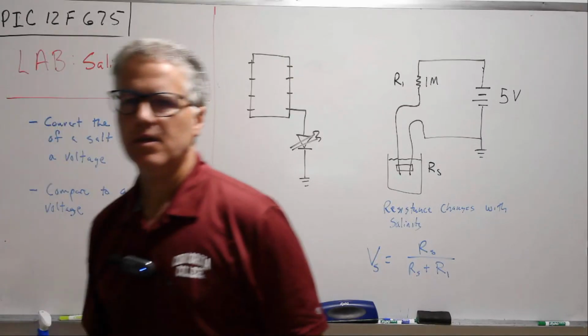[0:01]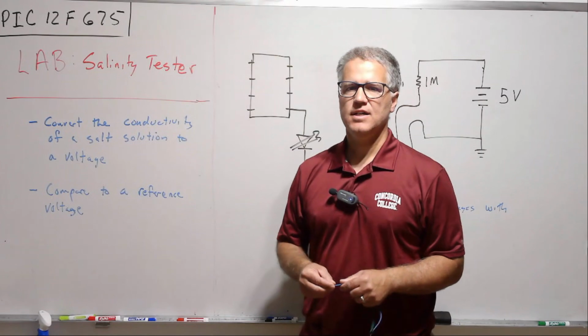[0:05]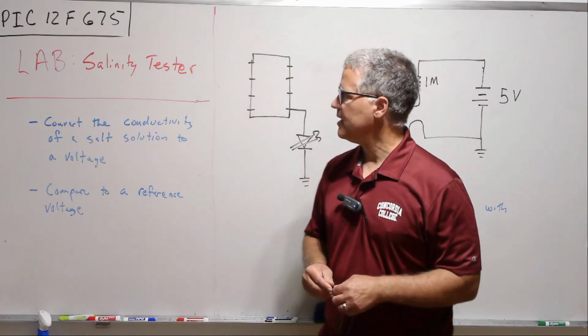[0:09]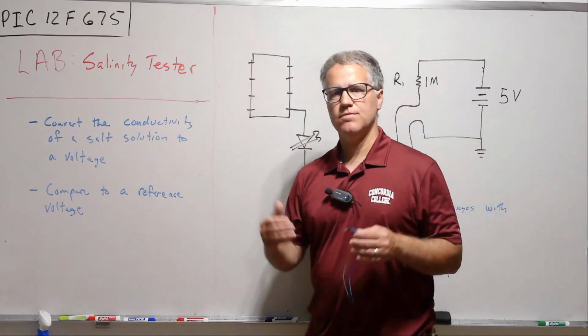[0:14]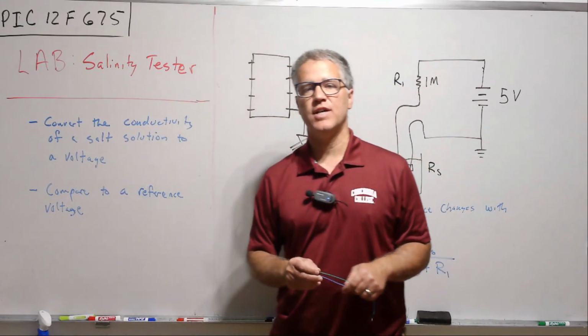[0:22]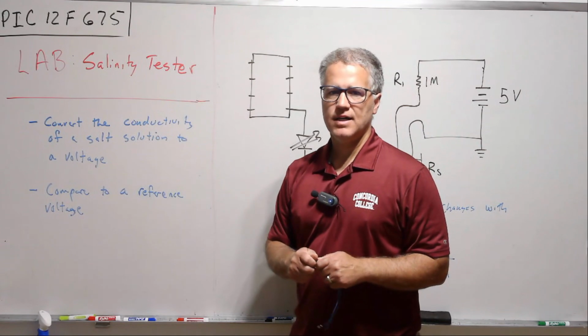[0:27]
Okay, I think we'll get started. So today we're going to do a little application lab after we've learned a little bit about this PIC12F675. This will be utilizing the comparator, and what we're going to do is build a little salinity tester. So the experiment will be pretty easy. It's stuff you can do at home even if you don't have access to a lab. All you need is some distilled water from the grocery store and some table salt.
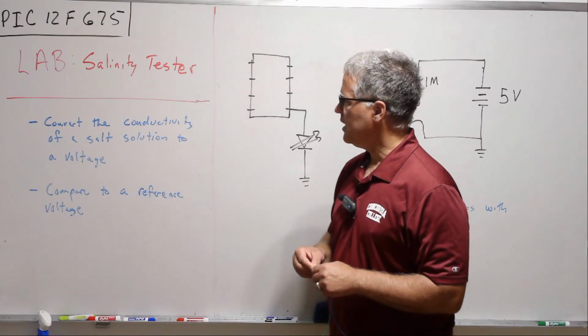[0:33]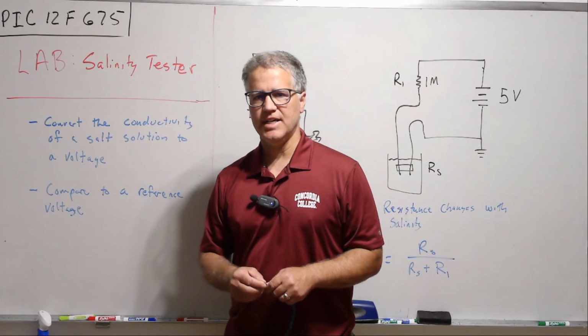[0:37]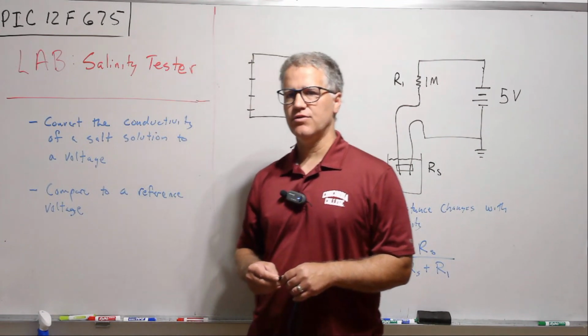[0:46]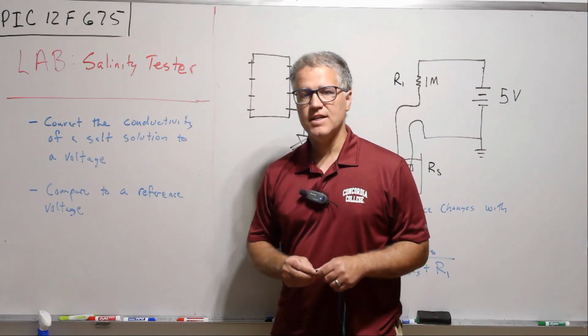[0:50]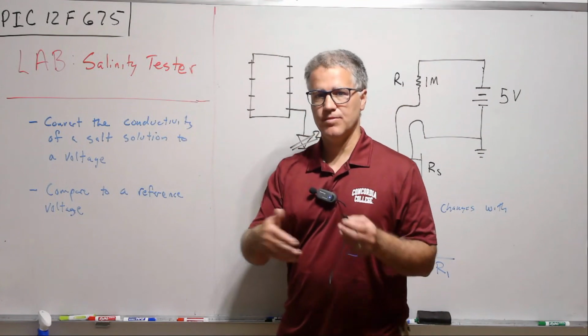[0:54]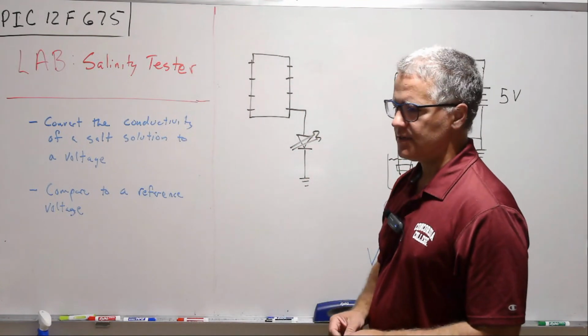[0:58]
And so we're just going to show the basic idea here, again emphasizing the microcontroller itself and the programming that goes into it, the assembly program that goes into it. So certainly you could do a little bit more advanced and careful study than this experiment. But I think this will show you the basis for how we would do something like this.
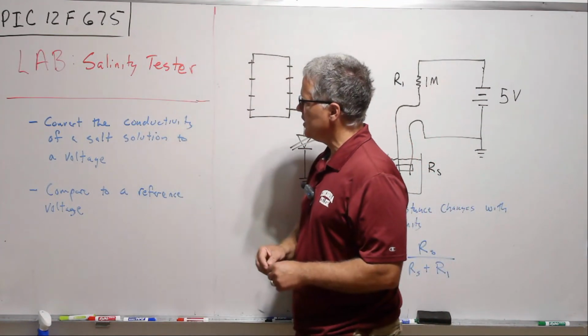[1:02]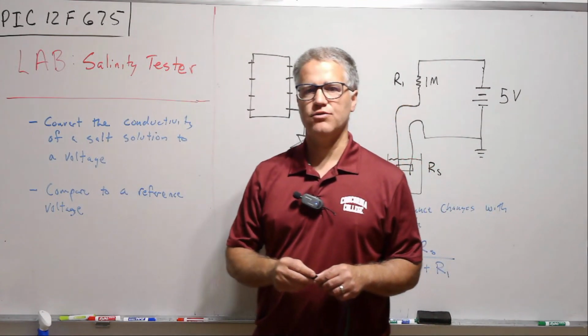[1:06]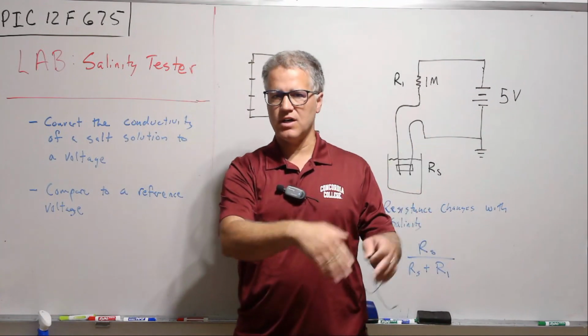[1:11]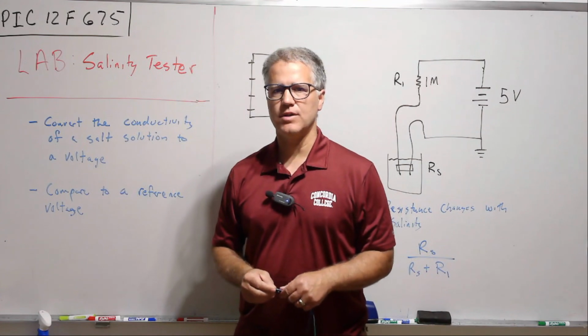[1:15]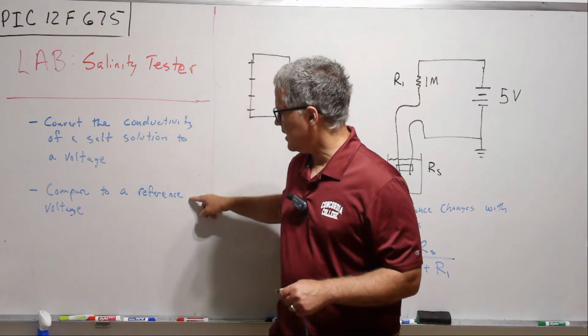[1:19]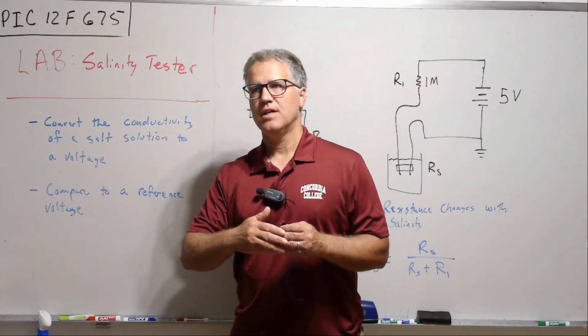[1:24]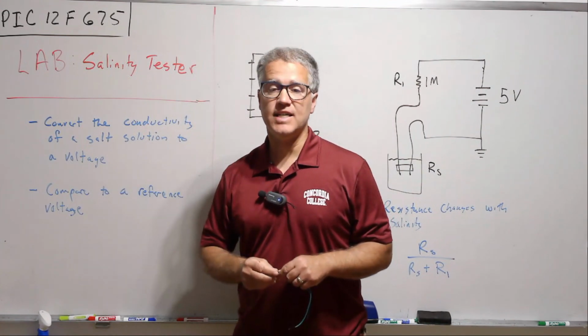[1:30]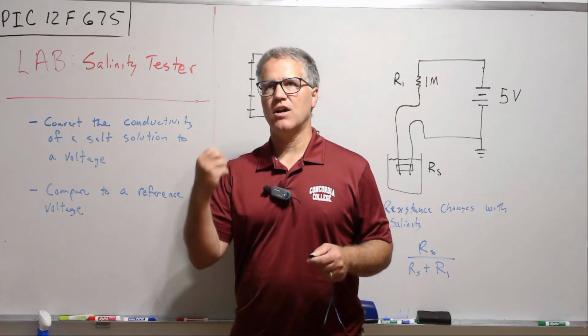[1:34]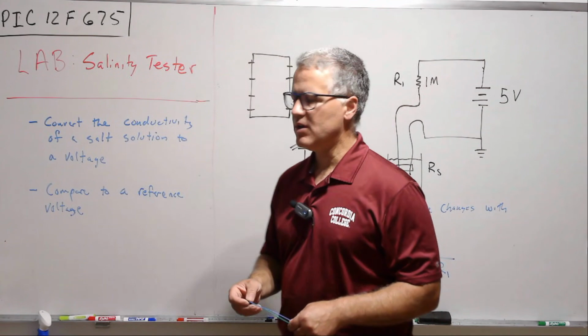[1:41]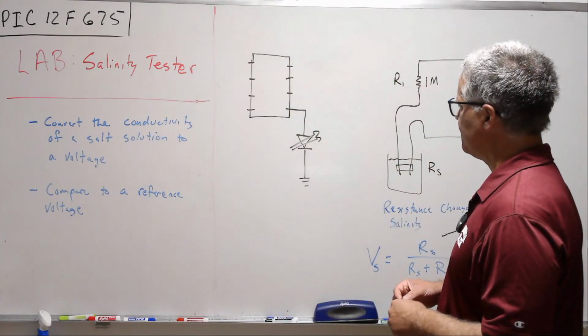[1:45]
So what we're going to do is convert the conductivity of a salt solution into a voltage, and we're going to compare distilled water with tap water and with a one molar sodium chloride solution. And so we'll compare to a reference voltage, and if we go lower, and I'll talk about that in a minute, then the comparator will turn an LED light on indicating the salinity is too high. So we want our LED light to be off when we have either distilled water or tap water, and then turn on when we have a high salt solution.
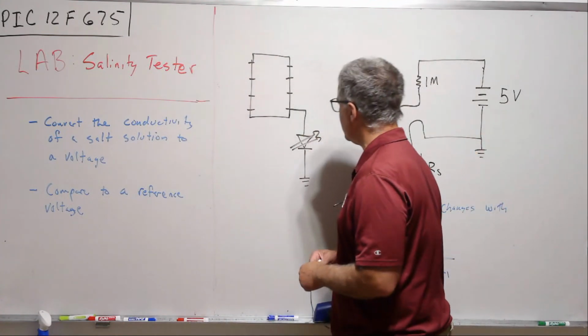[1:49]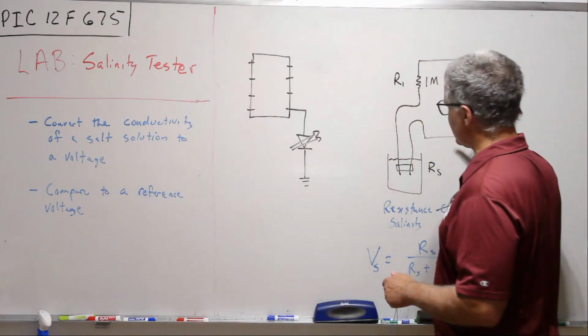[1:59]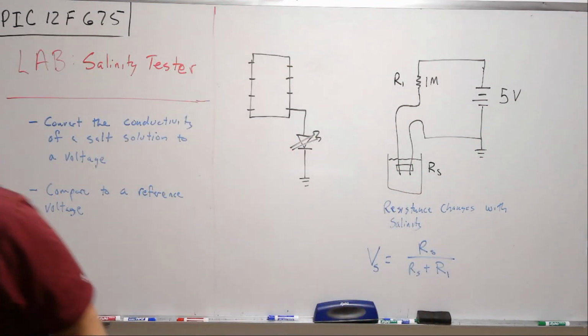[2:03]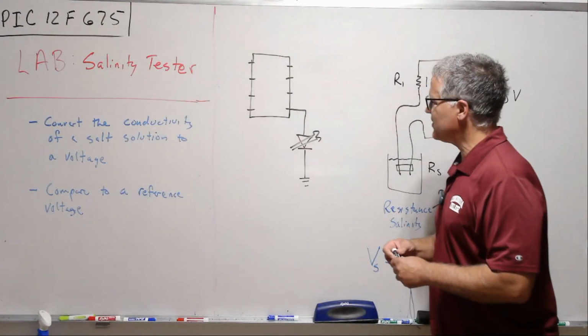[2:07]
So the setup is pretty simple here. We are going to just utilize the output of the comparator to our LED. And then let's talk about this circuit first here. My voltmeter keeps beeping at me, so I'll turn that off.
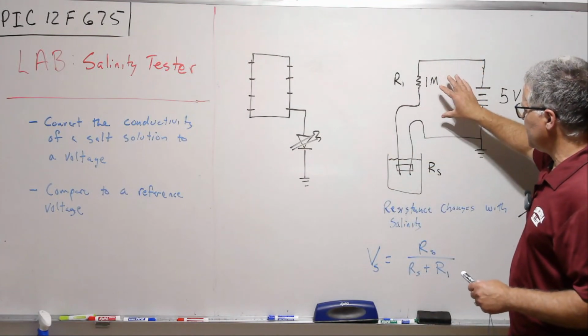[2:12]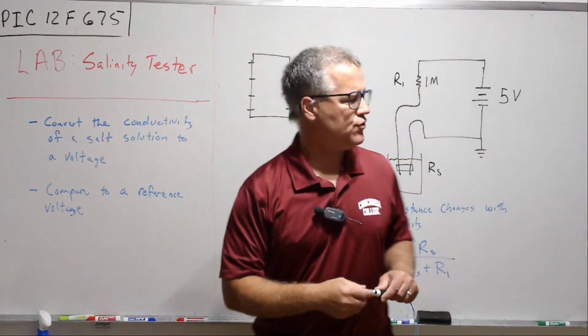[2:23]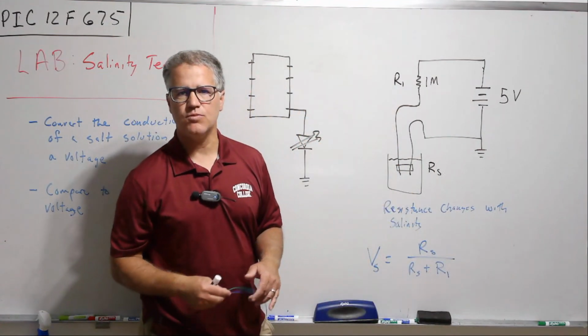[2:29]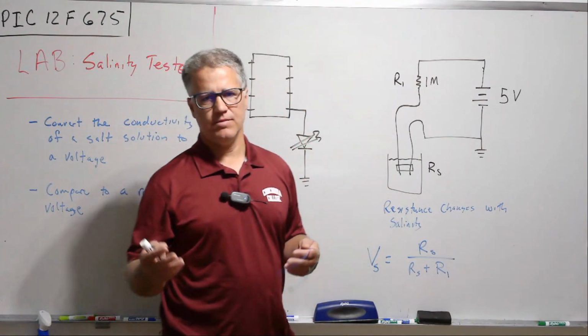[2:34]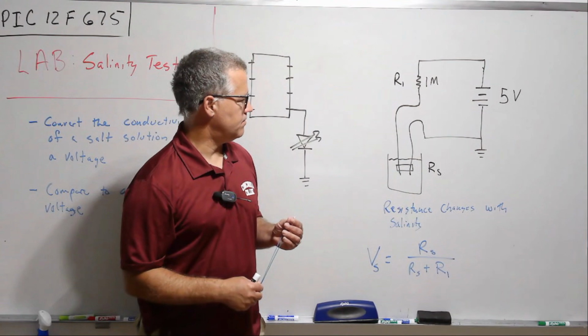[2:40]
Very simple circuit here, a voltage divider circuit. And we're going to have our solution in series with a resistor. I've chosen a very large resistor here because I want the voltage across the leads down here to be small. If we exceed even a volt, but say 0.87 volts, we will start to produce some oxygen and hydrogen at the electrodes. And so we don't want that redox reaction happening. We want to just measure the conductivity between the leads here.
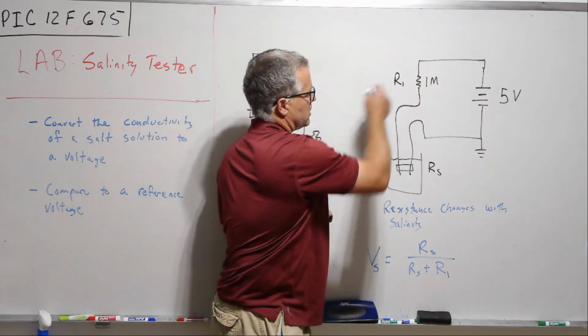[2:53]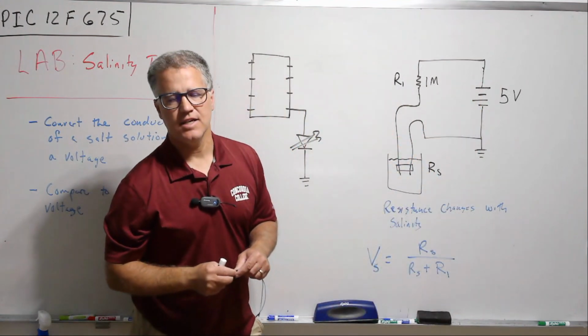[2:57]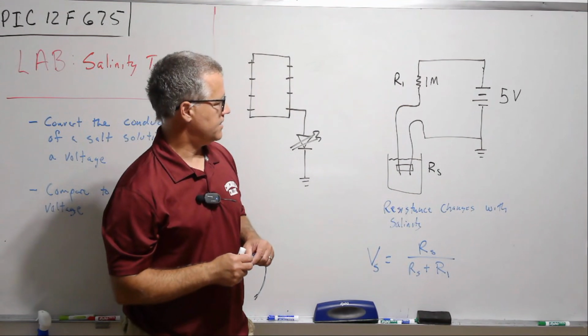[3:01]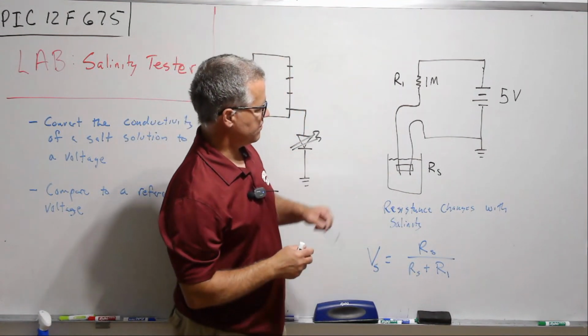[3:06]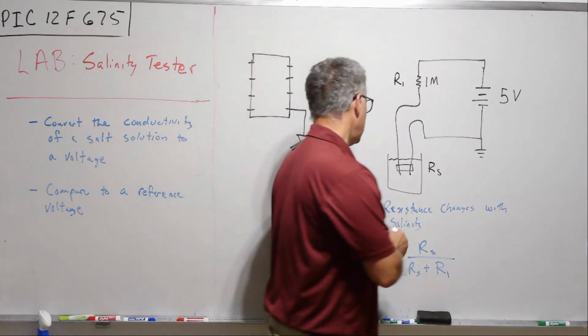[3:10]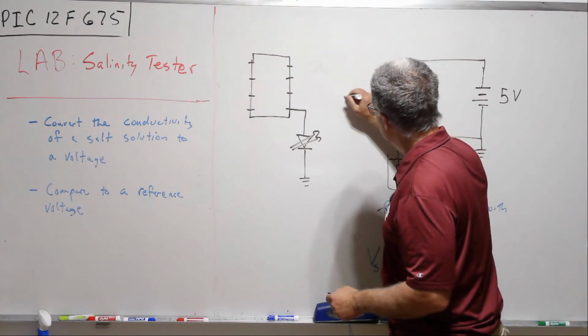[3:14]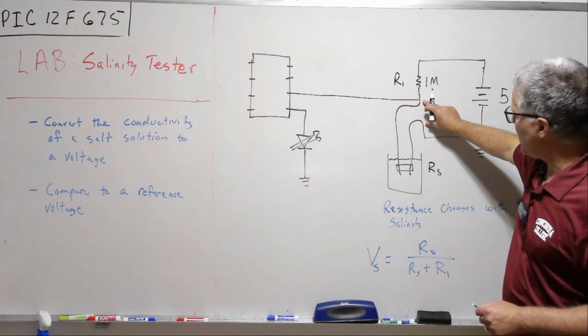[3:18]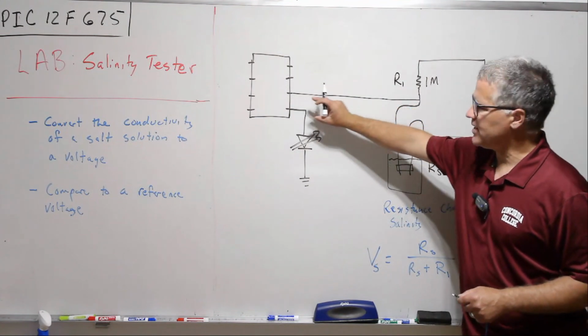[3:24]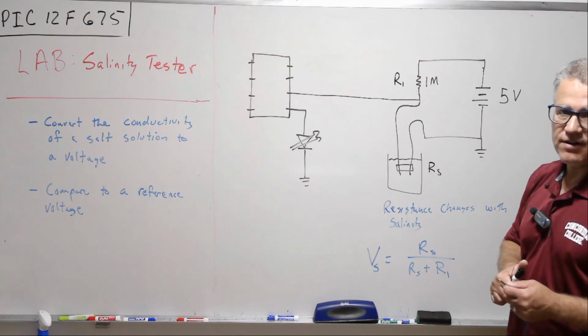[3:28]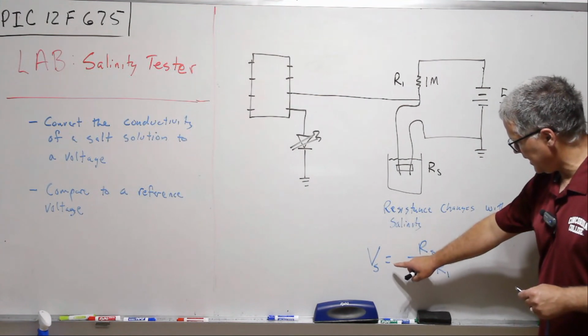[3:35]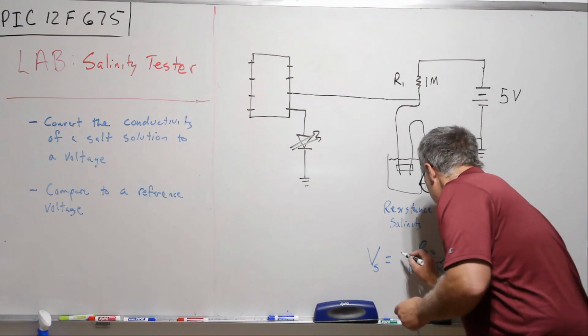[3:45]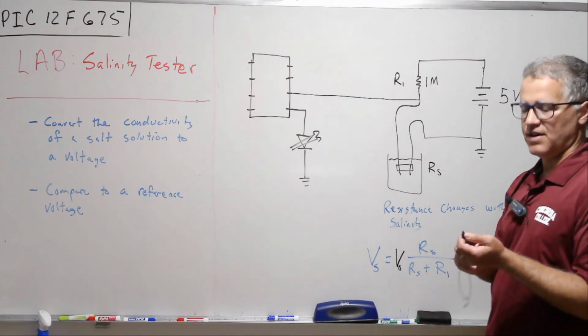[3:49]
So we put a large resistor here. That'll let us utilize the same voltage source that we're using to power the chip, and then we can drop the voltage enough across the solution. Simple voltage divider. We're going to then take this voltage across the, we'll call this RS, the resistance of the solution, and bring that into pin 1, which will compare then to a reference voltage. The voltage across here then is simply RS divided by RS plus R1 times V source, V naught, so times the 5 volts.
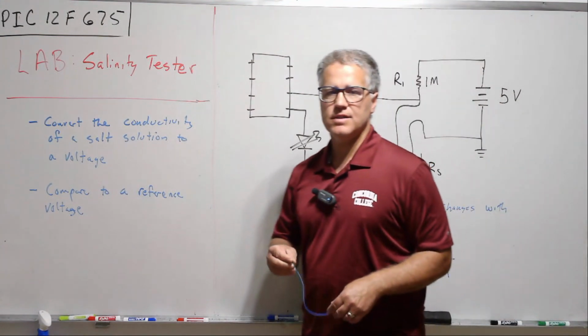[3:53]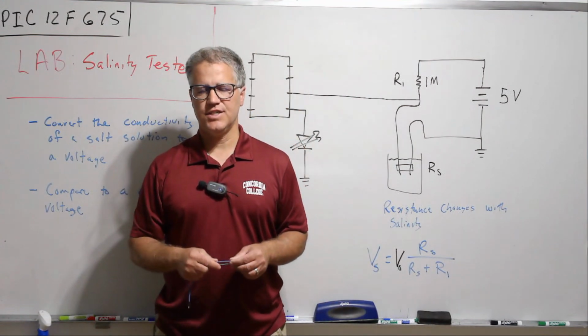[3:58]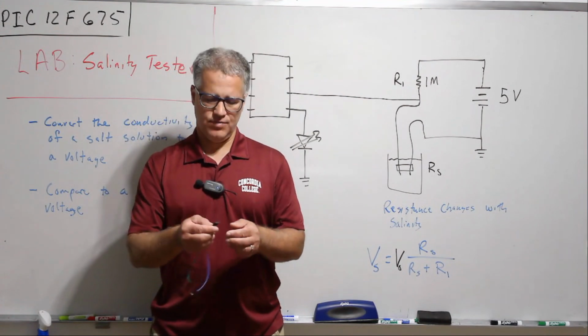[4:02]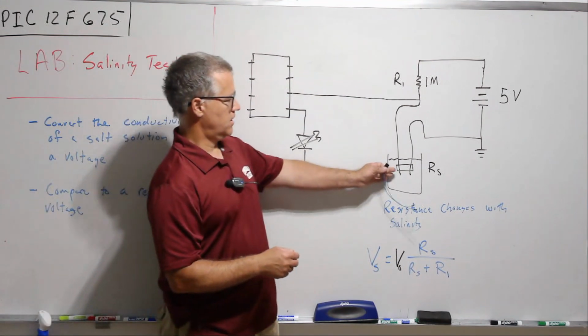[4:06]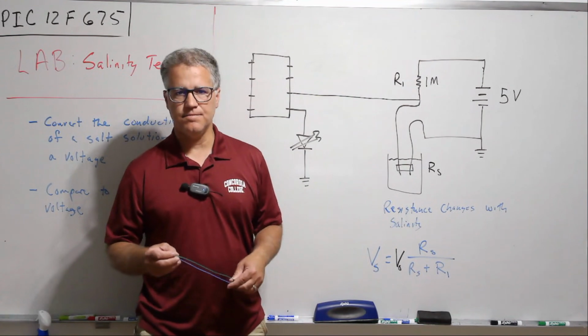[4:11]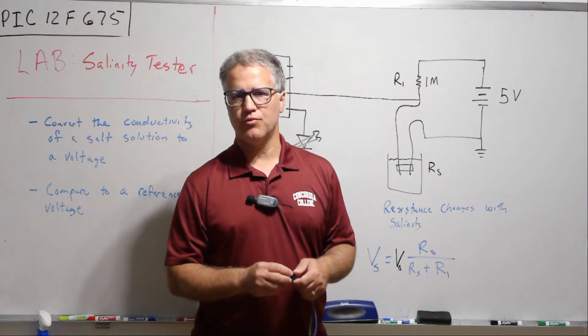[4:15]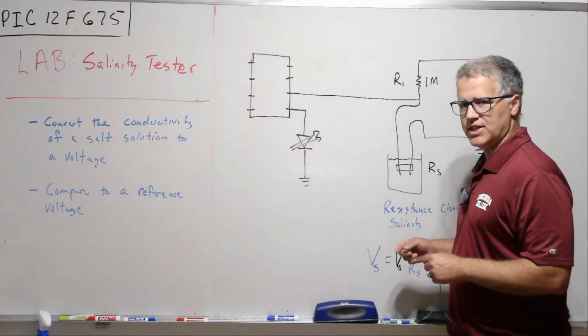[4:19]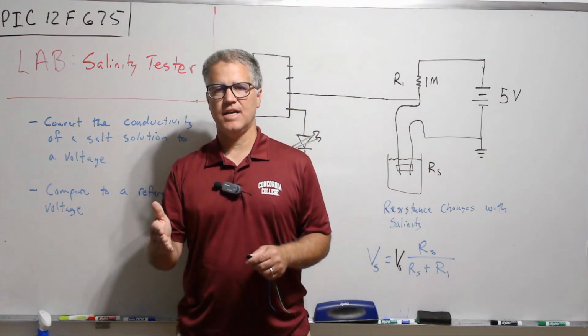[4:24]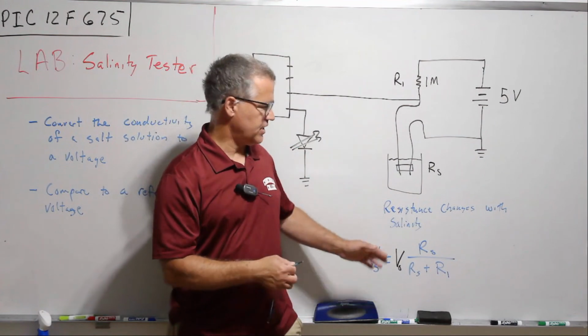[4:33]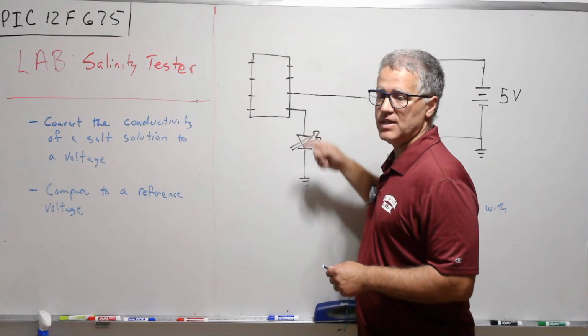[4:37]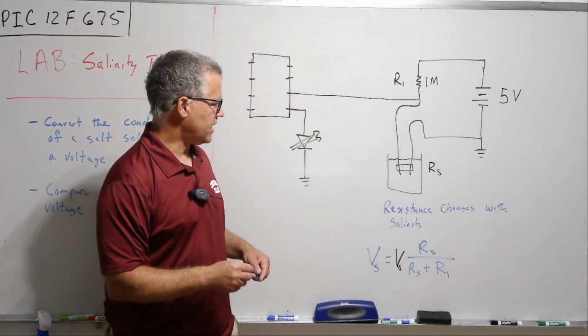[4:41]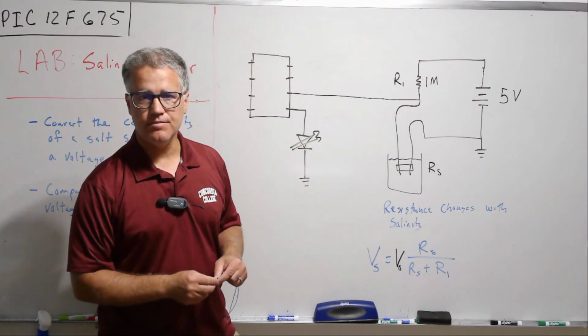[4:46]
Okay, now I'm going to do this a little bit out of order. We'll look at the circuit first, and then we'll talk about the code afterwards, because there's a little bit to it in terms of building your little device here for testing the solution, and then getting that all set up. Now, I did do a couple of pre-calculations. I wanted to figure out the voltage of the tap solution, the de-ionized or distilled water solution, and the one molar sodium chloride solution. So I checked that voltage so that I could institute the correct reference voltage here. The idea being that we would get the range of voltages that we want, and then we can set things up internally in the code to turn the light on when we go below a particular voltage.
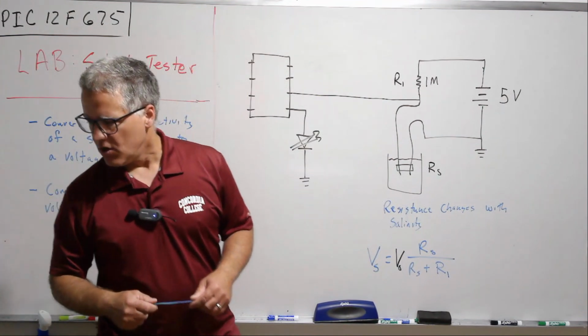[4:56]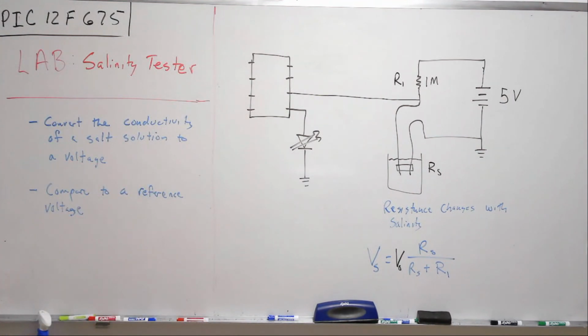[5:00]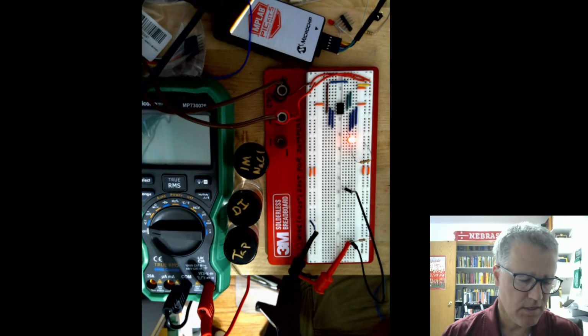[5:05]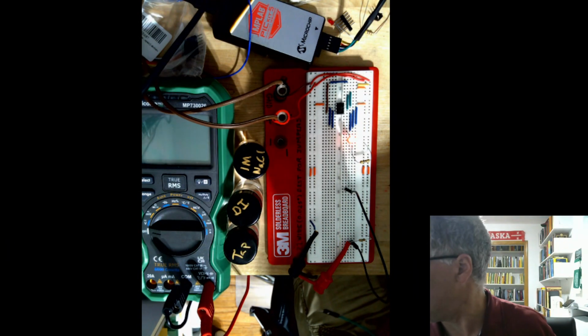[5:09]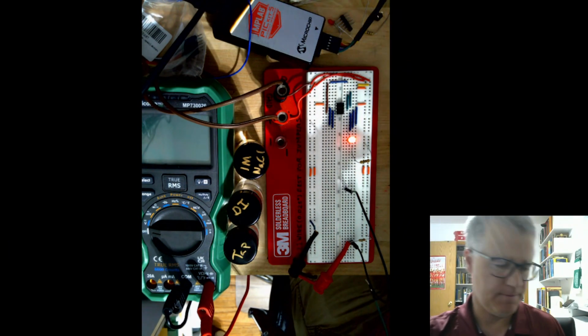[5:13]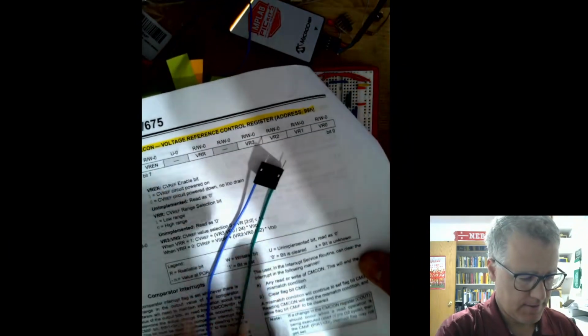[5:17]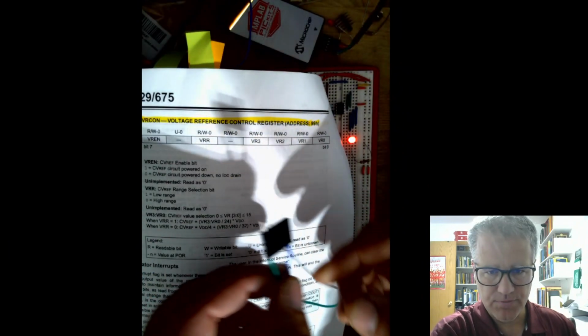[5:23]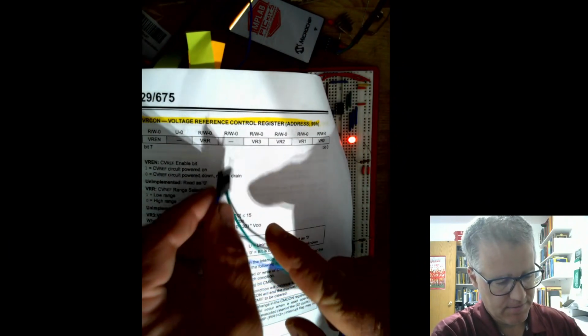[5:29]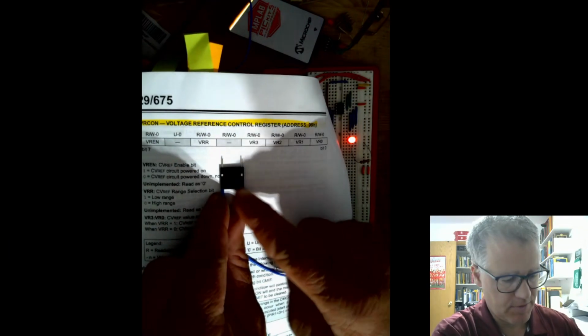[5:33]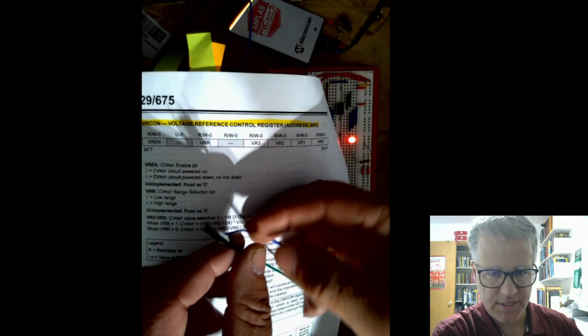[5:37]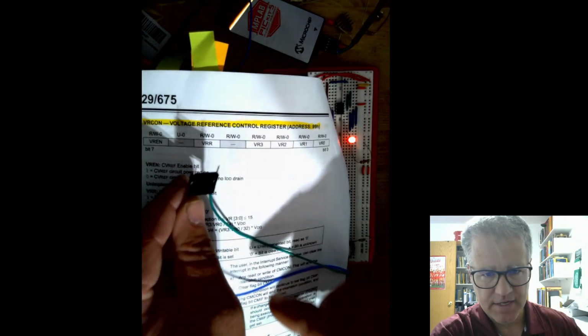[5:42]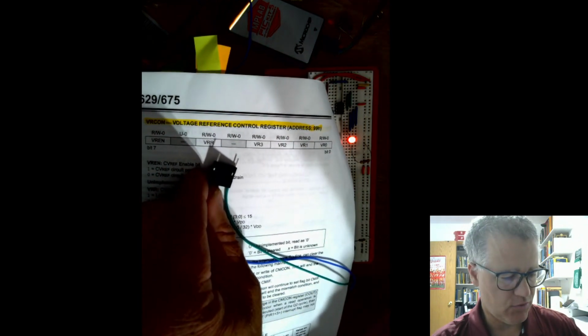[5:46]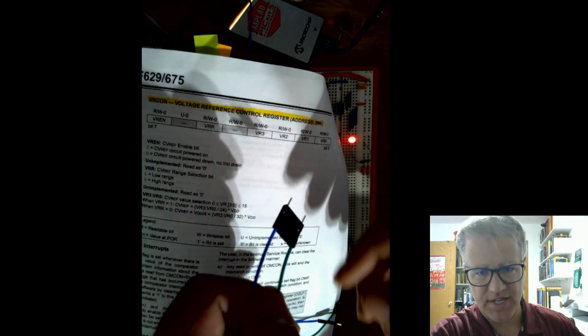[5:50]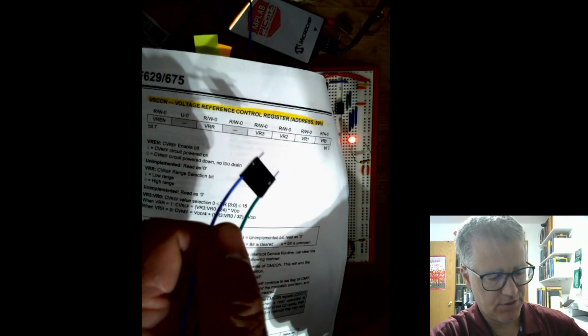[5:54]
Okay, so let's go to the circuit and take a look at that. First of all, I'm going to try to put this against a background. I've just built this solution probe with these DuPont leads. So maybe you have some of those. I chose a six-member connector piece here, and then I put these on both ends of that so that this will always have a consistent distance between the leads. It also provides a stable case for these wires when you dip them into the solution. So this is just completely home built.
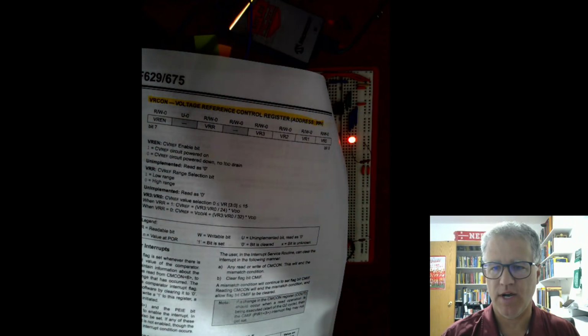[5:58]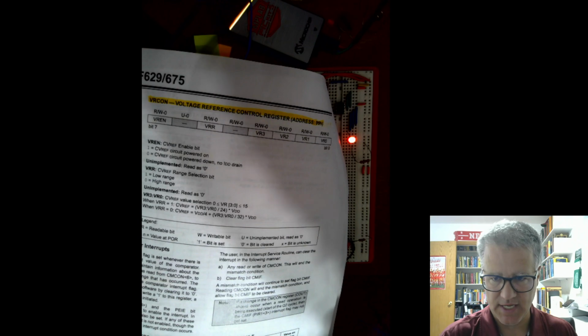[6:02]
Now you could take some wire and use a hot glue gun or something like that. Do something to try to keep the wires consistent. You could use two separate wires, but it's nice to have the consistency of distance.
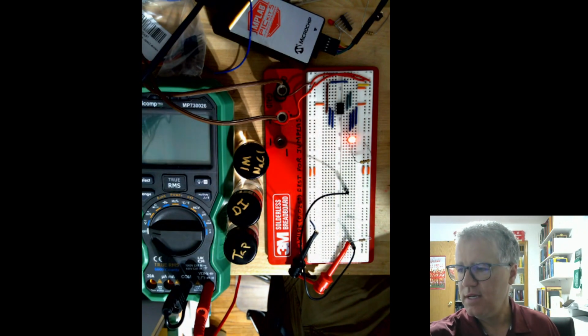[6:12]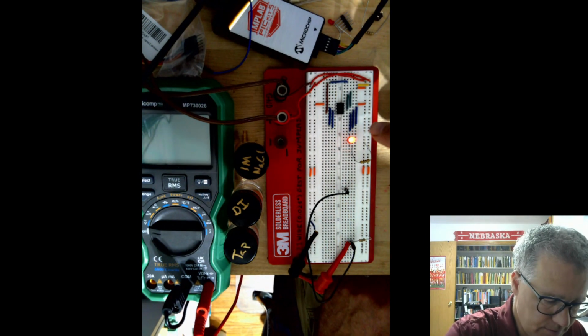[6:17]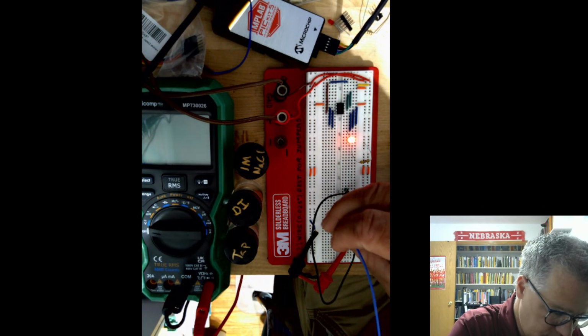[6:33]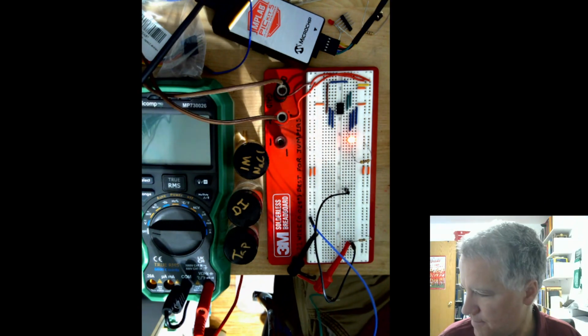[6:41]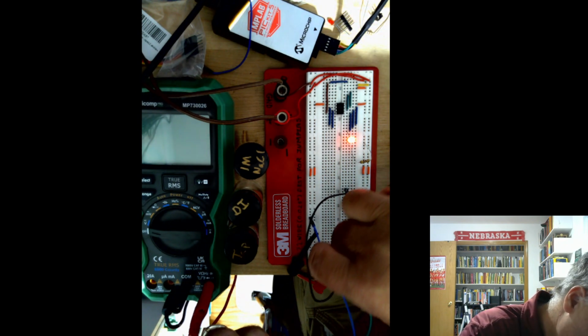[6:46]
All right, so let's look at the circuit here now. Simple setup. The light is on here because it's just getting some spurious voltage because nothing's hooked up. So we'll see it blink or turn on and off as we go. The voltage divider then is down here. So I'm going to connect one lead of the solution probe to ground and one lead to the other part of this circuit. And then I'm going to turn my voltage on.
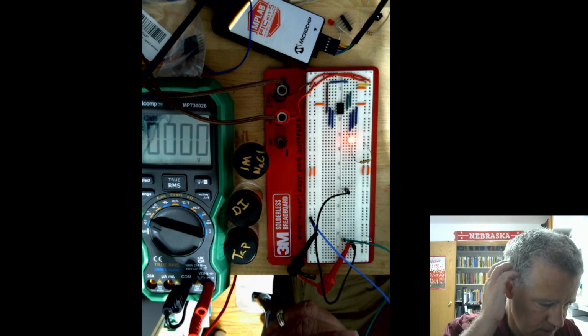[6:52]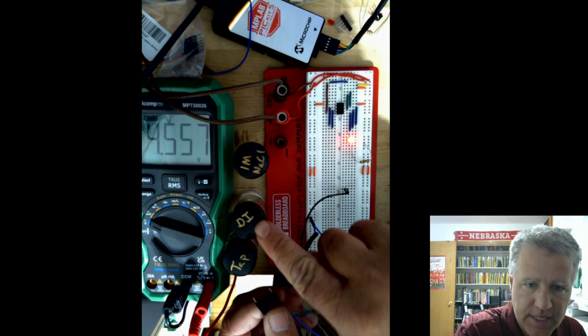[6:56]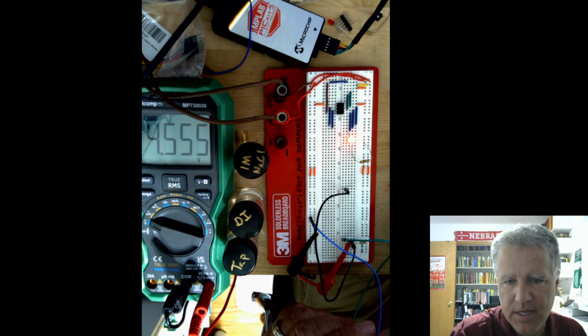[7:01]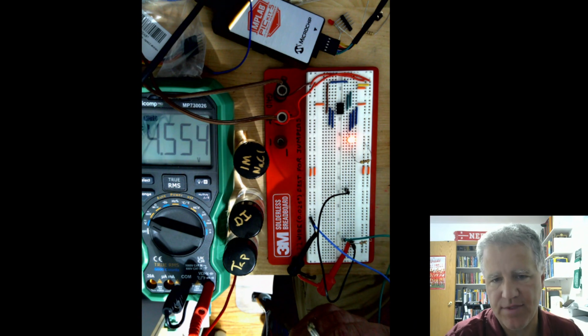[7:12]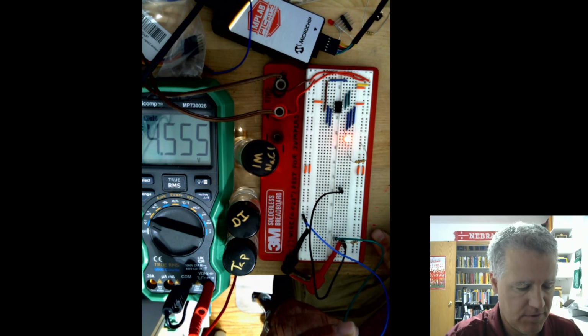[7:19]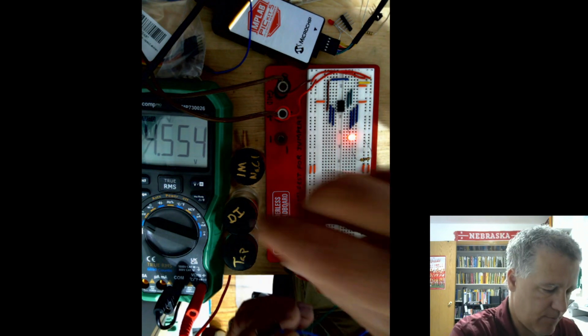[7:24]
And first, let's put this into the deionized water. So I've got deionized water, tap water, and sodium chloride. If you're doing this in sequence, probably best to go from the most dilute, the deionized, up to the most concentrated. Then we can pretty much just dry the probe and dip it in. If you're going the other way, you'll want to wash the probe off, make sure that you don't carry any salt on the probe into the deionized or the tap water solution.
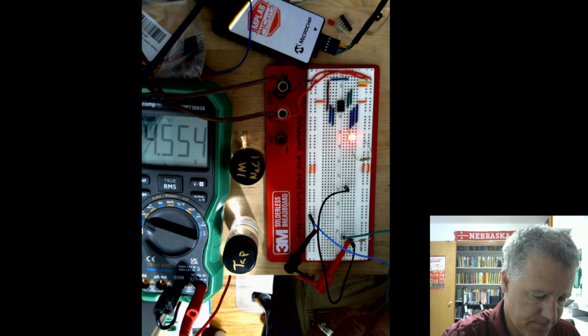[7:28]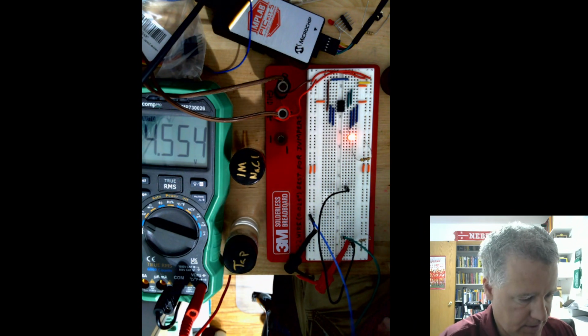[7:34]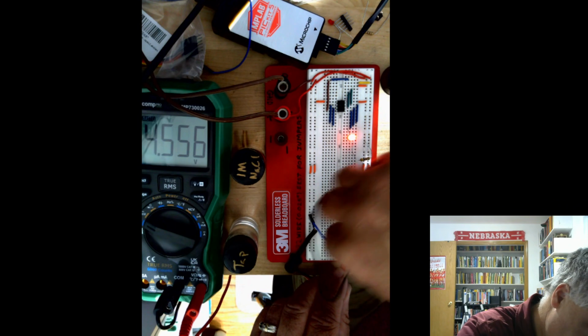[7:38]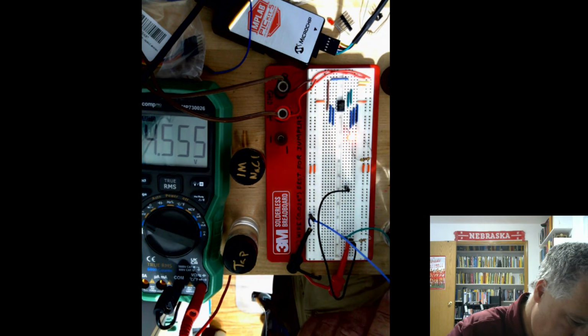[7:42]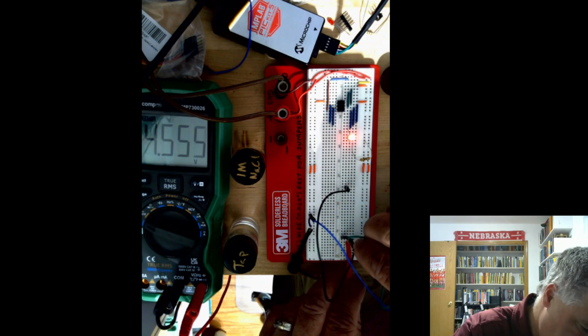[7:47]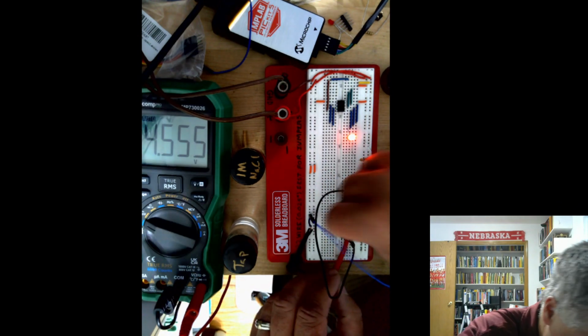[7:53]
So let's try the deionized solution first. And we'll see the voltage drop here considerably because even in the, let's see what's going on. Voltage measured across here. Must have something mishooked up. Oh, yeah, I do.
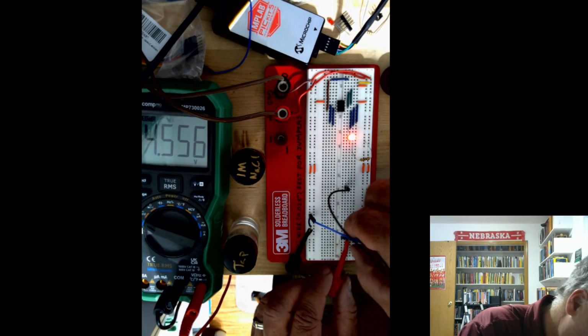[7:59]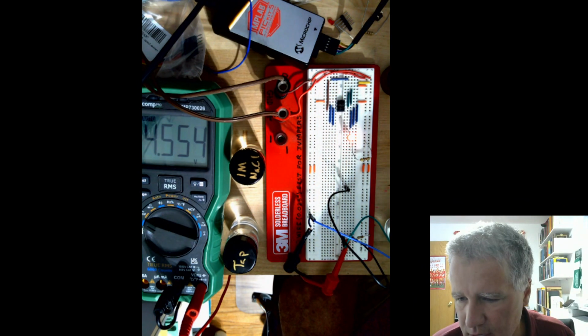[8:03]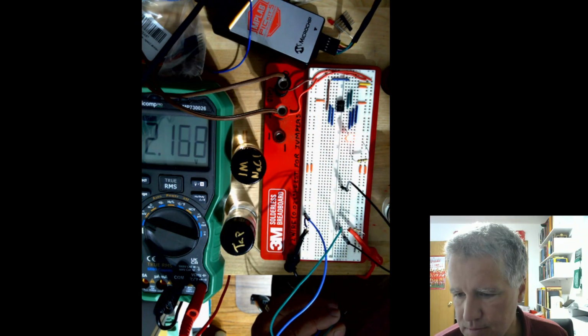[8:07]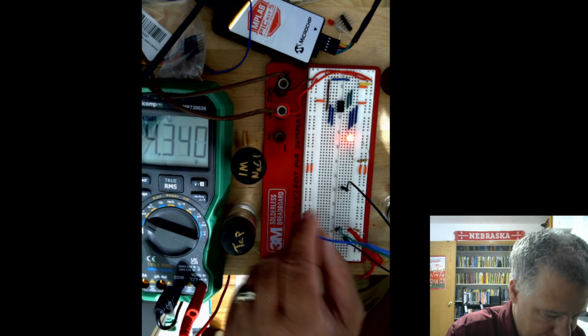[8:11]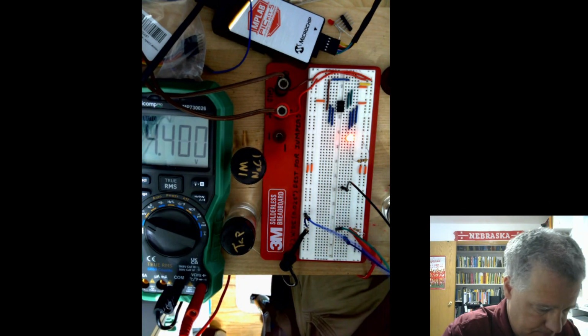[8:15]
Okay, I'm gonna pause the video and then figure out what I've got mishooked up here. Okay, I think I must have had some wires in the wrong spot, or there was a flaky spot, but I've taken them out and re-put them back in. It seems to be working now. So let's look at our voltage here as I put this into the deionized.
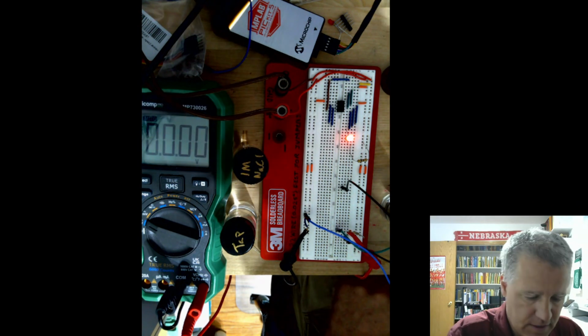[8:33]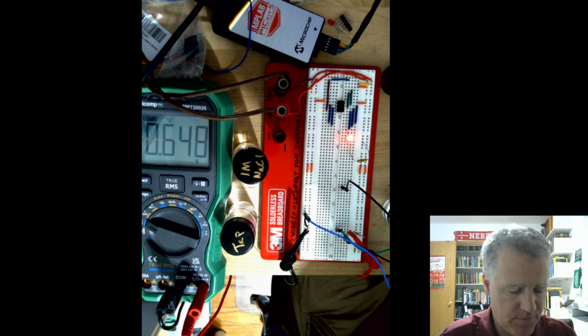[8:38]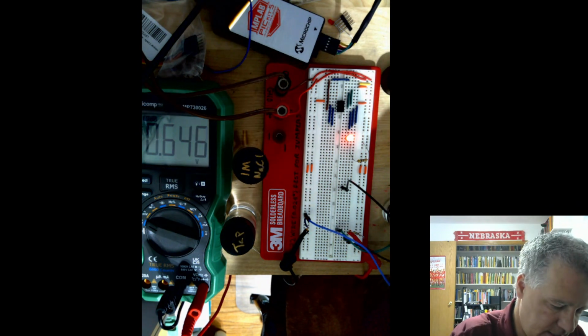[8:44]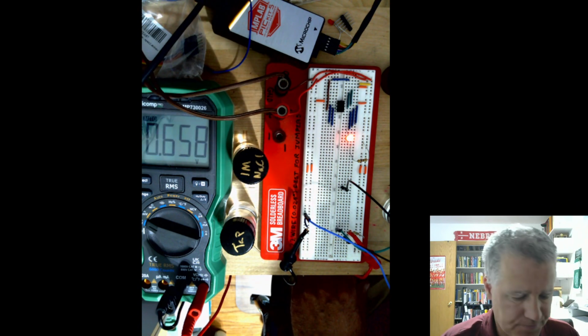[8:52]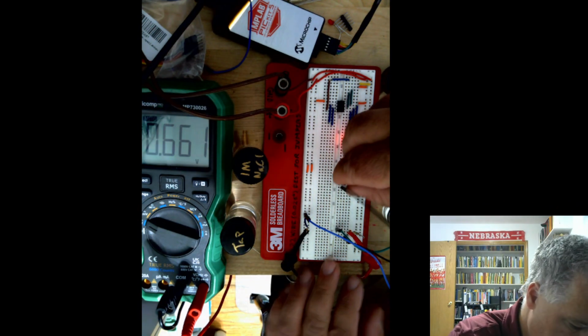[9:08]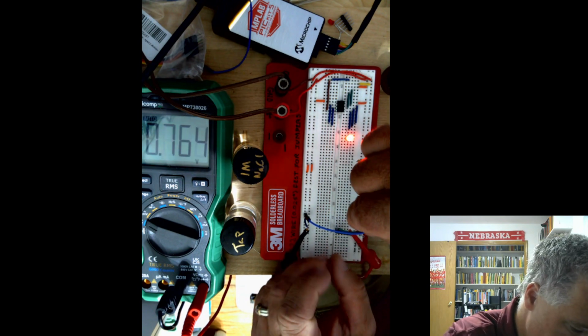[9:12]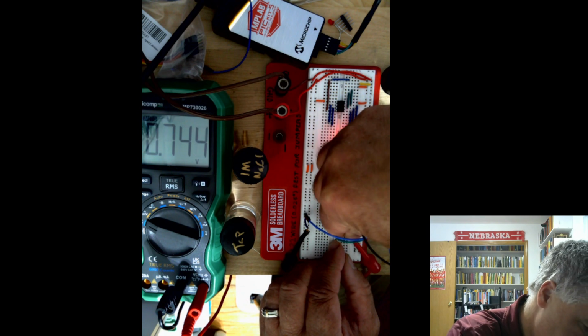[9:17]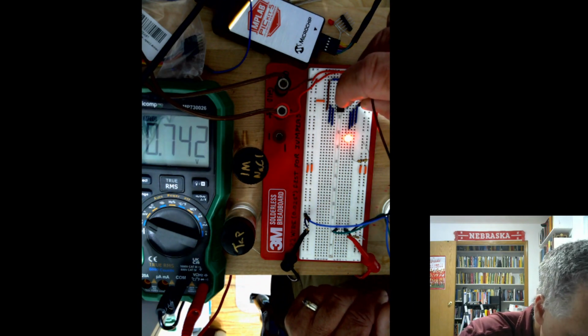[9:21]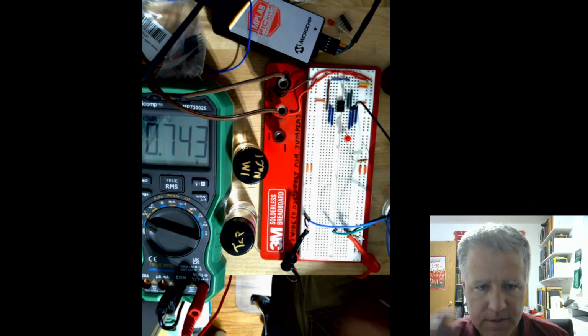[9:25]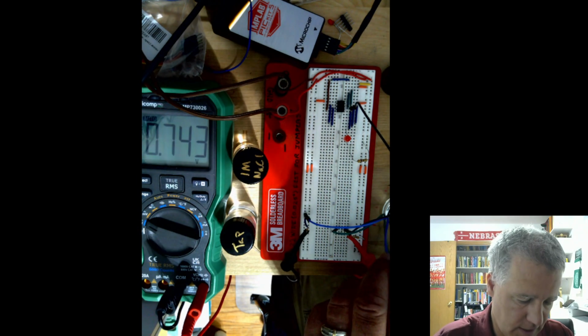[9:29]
So we've got the probe in solution here. I'm going to now take a lead and bring that over to the input, which is 1, and our light goes off. Okay, so we're in our distilled water and our light goes off.
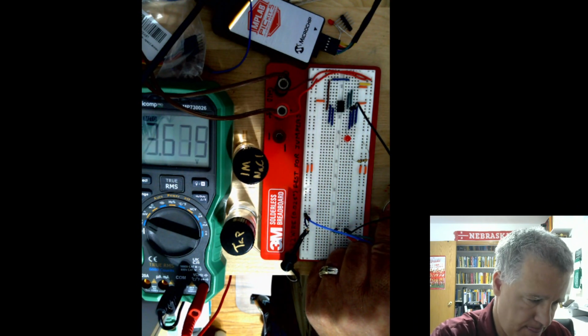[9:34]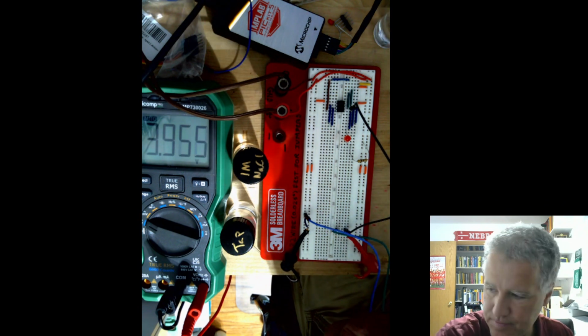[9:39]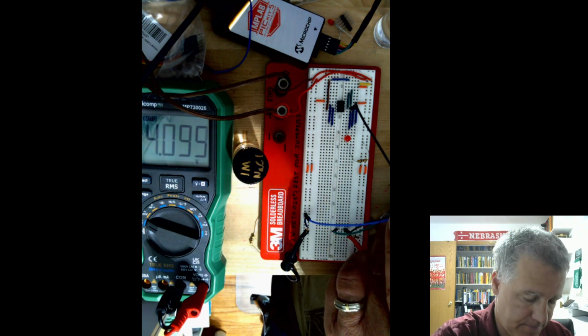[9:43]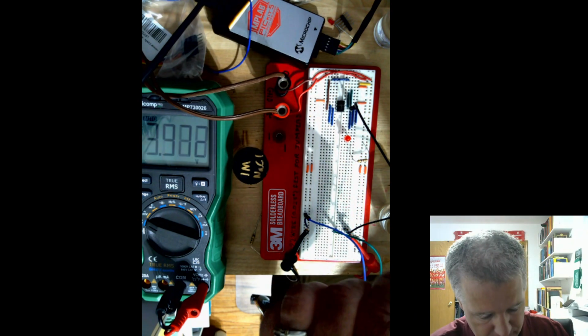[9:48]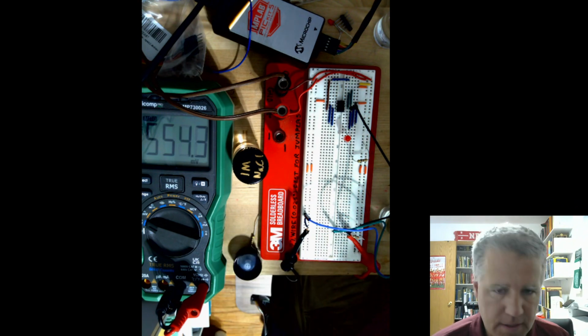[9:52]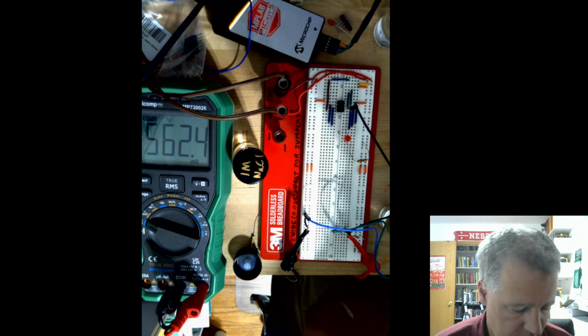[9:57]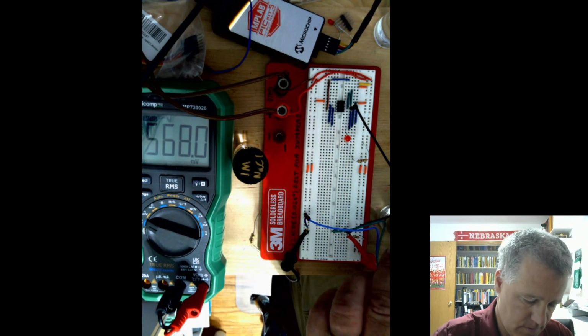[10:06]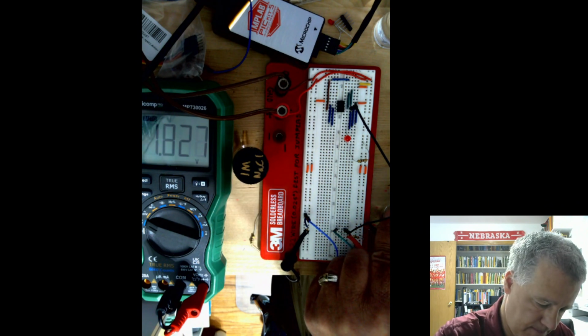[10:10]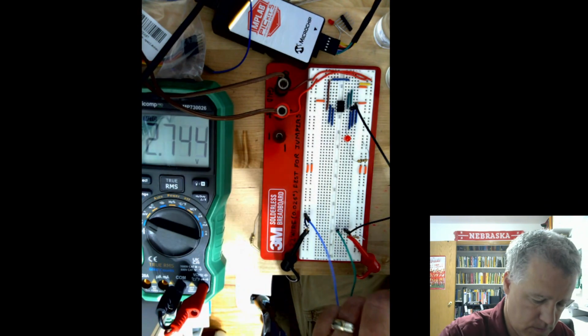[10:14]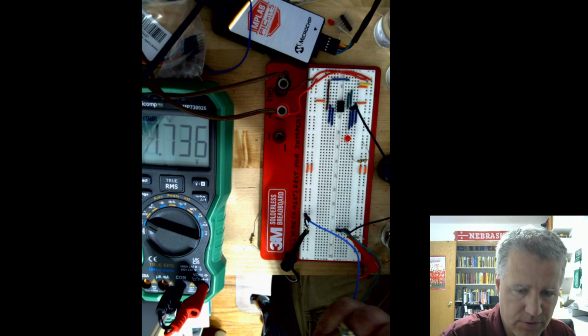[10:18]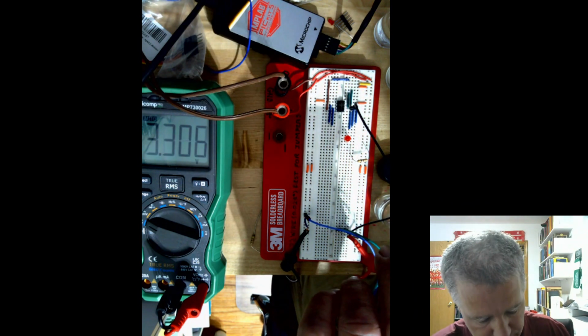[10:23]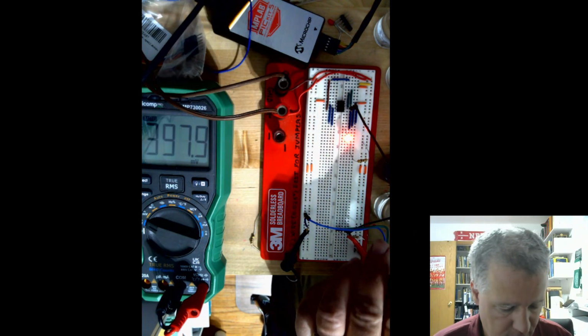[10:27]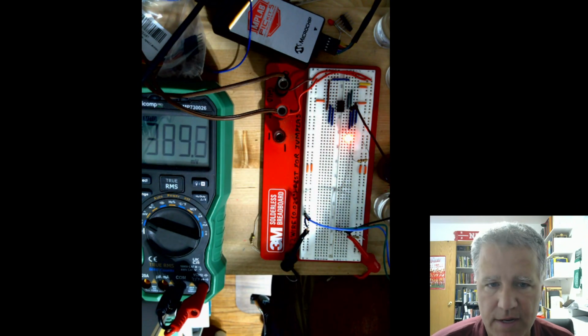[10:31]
And now finally, we will use the 1 molar sodium chloride solution. And now we are below the threshold and we can see that our light went on. So this is our circuit working here now.
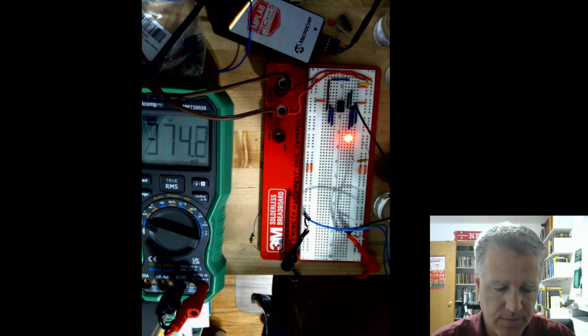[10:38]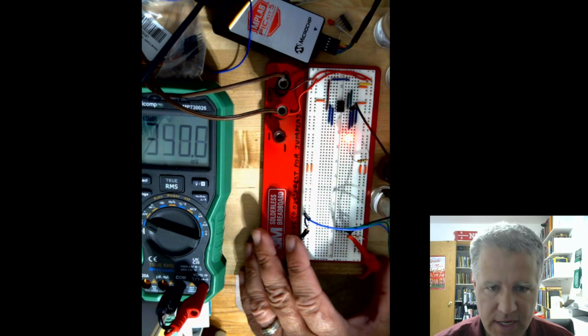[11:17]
Now, if you wanted to be a little more advanced with this, you could make several salt solutions and try to get a profile of the voltage as a function of the salinity. And you could be a little more sophisticated in how you turn things on and off. If you want to get a little more advanced with the code, you could shift to using the A to D converter and then having a sequence of lights light up for the level of the salinity. So there's lots of things you can do from here, but this is showing the basic start of that. Let's go ahead and look at the code now.
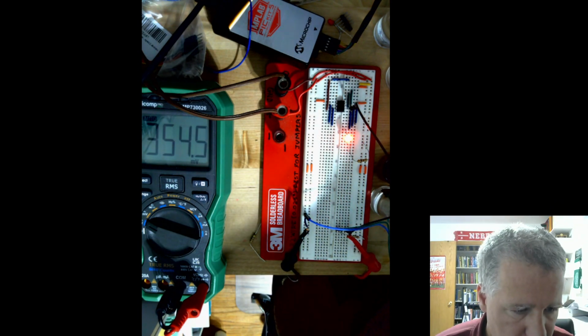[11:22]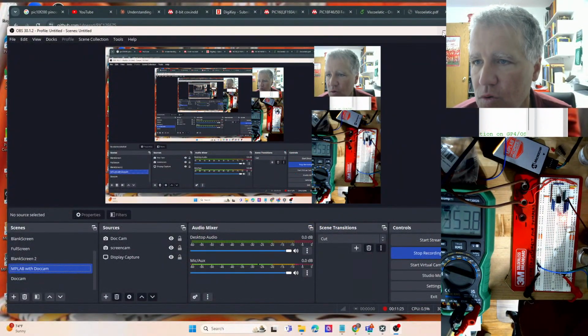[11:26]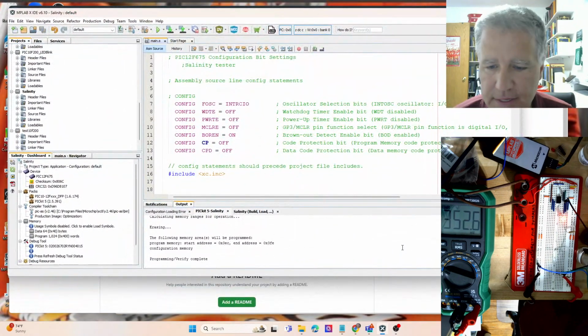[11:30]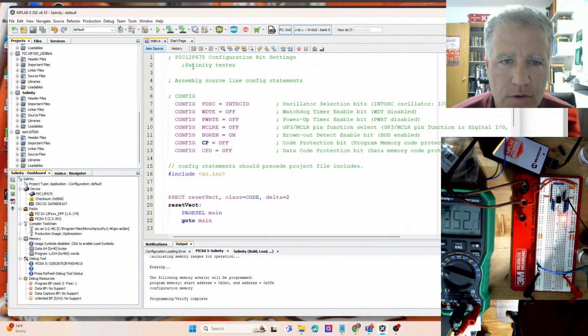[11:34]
So I'm going to switch to seeing the code. And so let's take a look at that. So here's our Salinity tester, and I'll have this code up in GitHub, at the GitHub page, so you could find that. It's very similar to the comparator code that we used before. Just a few changes, and we'll see where those go.
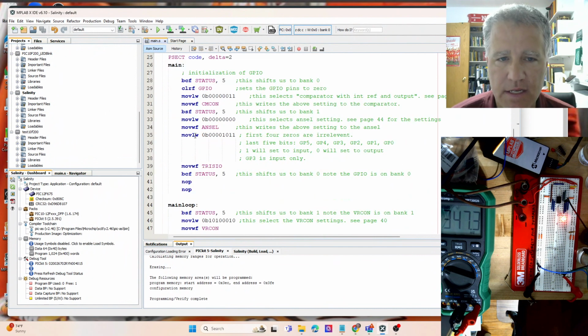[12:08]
Now, first part, again, as always, our configuration bits, the include file, and then the code here to set where the main program starts and all that stuff that has to always be there. Then again, the way I tend to like to write them, main and then the main loop. So main is the stuff that we do at the beginning that doesn't have to change. And then main loop is when the program's up and running as it is now.
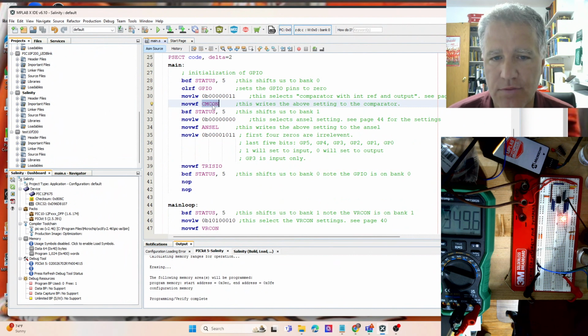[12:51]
So we'll go through this quickly because we've talked about this in the other videos, but we need to go from bank zero to bank one depending on what we need to change. So we are going to go to bank zero because both the GPIO, so we'll just for good measure clear the GPIO, but more importantly the comparator register is in bank zero. So here's where we're going to set the comparator, and let's review that again.
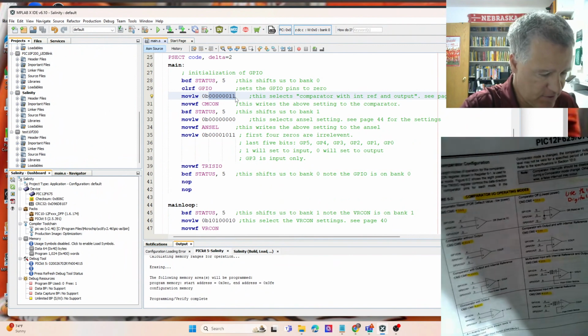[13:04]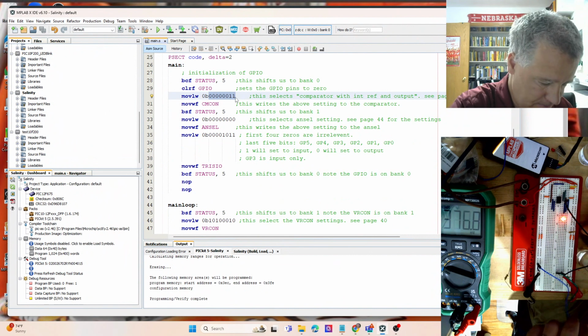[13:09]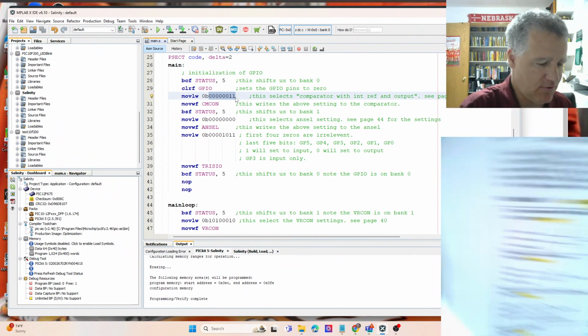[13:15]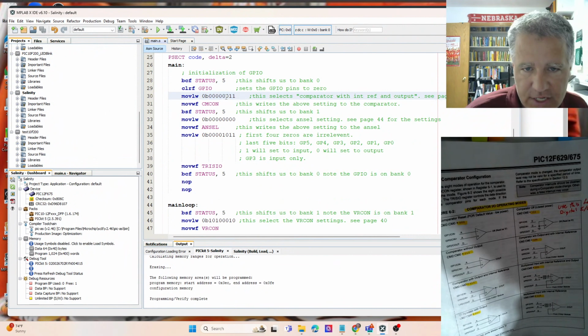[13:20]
So if you follow along in the data sheet on page 37, we'll be looking at, actually I'm going to cap my solutions because very likely tip that over. So we look at these last three digits to set the comparator type. And so we're gonna do this type output. So we want an output with internal reference. And so our output pin is gonna be pin 2, GP2. And our input pin is gonna be GP1, and it's gotta be set as an input.
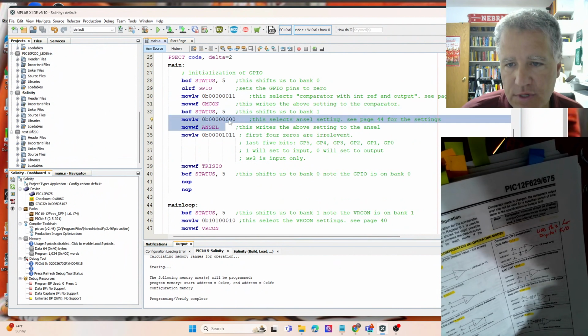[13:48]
So as we proceed here, we are now gonna go to bank 1. And we're going to clear out the ANSEL register because this is dealing with the analog to digital, and that will take precedence. So we want to set that to zero.
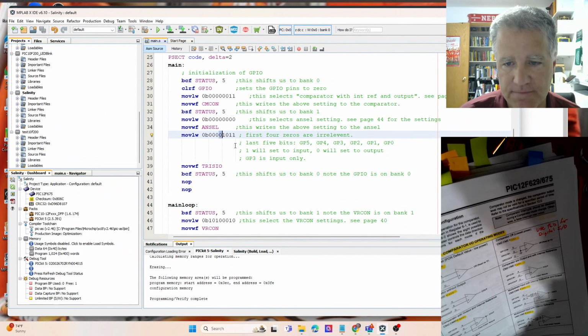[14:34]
Then here's where we set up the TRIS. In the TRIS IO is where we assign whether a pin is an input pin or an output pin. It doesn't matter what pin zero is, but we want pin one to be an input pin. And then we want pin 2 to be an output pin. So this is pin 0, pin 1, pin 2, pin 3. Pin 3 is always an input, so that's always a 1. And then pin 4 and pin 5 don't matter for this setup.
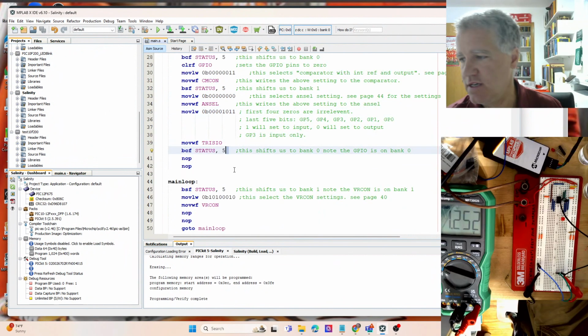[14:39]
Then we're going to shift back to bank 0 because we're going to be turning on and off those GPIOs. But as we get in the main loop, we're going to have to do some switching back and forth here. Now we go into the main loop and we need to switch back to bank one. And so we're going to be able to access the VRCON. And this is on page 40. So let's look at that.
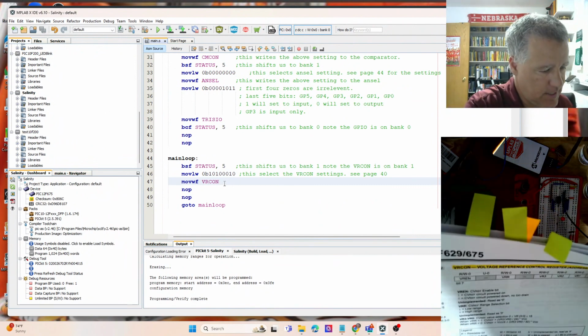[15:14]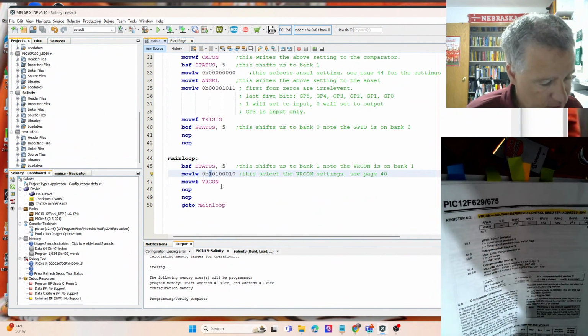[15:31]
We've talked about this before, but just as a reminder, we want to set the last bit here, bit 7, to a 1, because that will tell us that we are going to use an internal reference. Then the last 4 bits here, bit 0 through bit 3, are going to tell us... well, let me get the rest of these. This is an unused pin. This pin will tell us if we're in the high range or the low range. And we want to be in the low range because we're measuring sub 1 volt here on top of 5. So it's comparing relative to the full voltage that the chip is getting, so 5 volts.
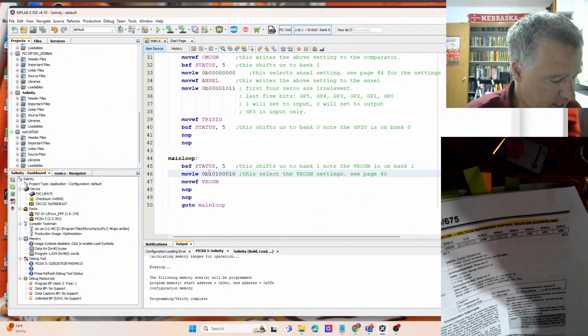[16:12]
So that's roughly half, not exactly, but roughly half. If you want voltages below, in this case, 2.5 volts, which we do, then you'd want to set that to 1. So we set this to 1. And then it's these last 4 bits that tell us what our reference voltage is. And in the low setting, we look at the equation here. In the low setting, it's just that value in binary divided by 24 times the 5 volts.
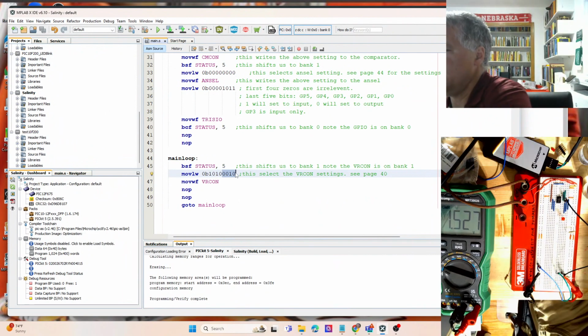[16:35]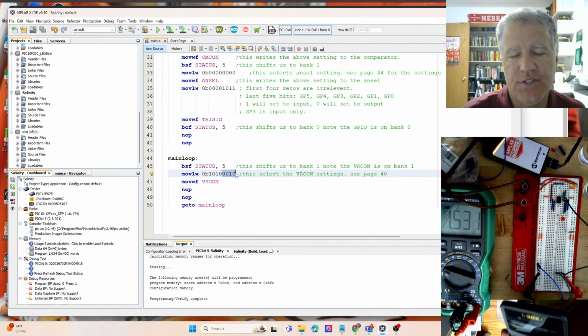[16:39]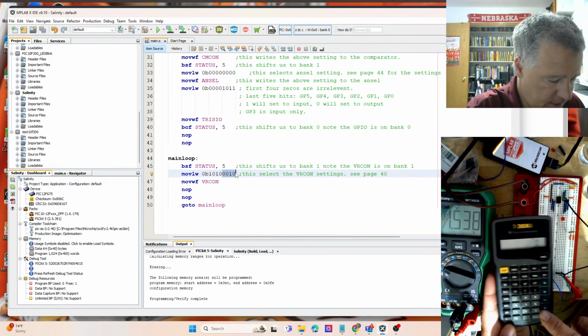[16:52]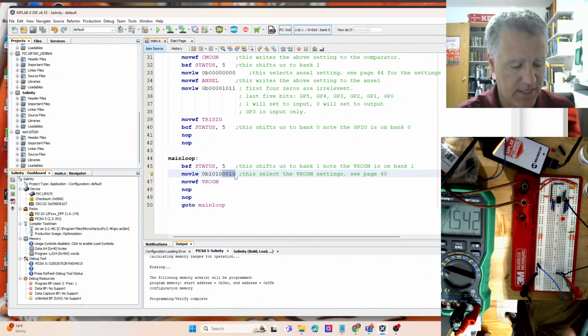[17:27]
So let's look at what we want here. We saw that the salt solution was about 0.3 volts, and the deionized was 0.7, and the tap was 0.5. So we want the transition to be somewhere between that. So let's go ahead and calculate that. We would take 5 volts, divide by 24, which gives us the base step size for this. Now this is too low because this would still be off when we have our salt solution in. But if we step this up, say multiply by 2, that's going to be 416 millivolts or 0.416 volts. And so we use not 1, but 2 here. So this is 2 in binary. So 2 divided by 24 times 5 volts will be our reference voltage.
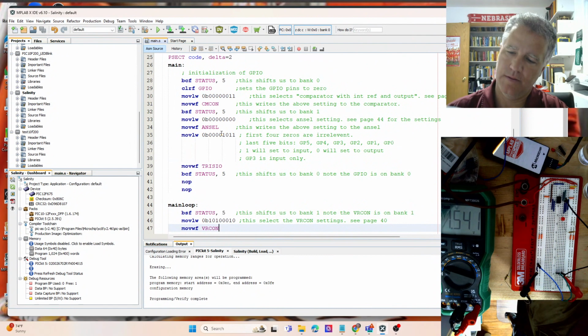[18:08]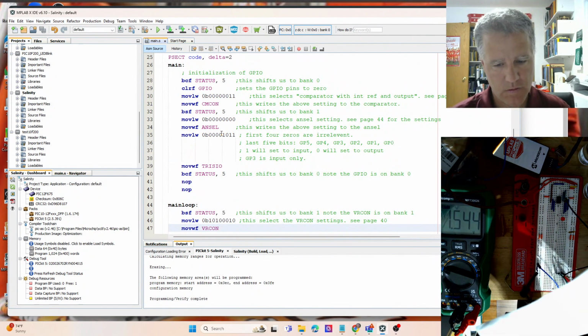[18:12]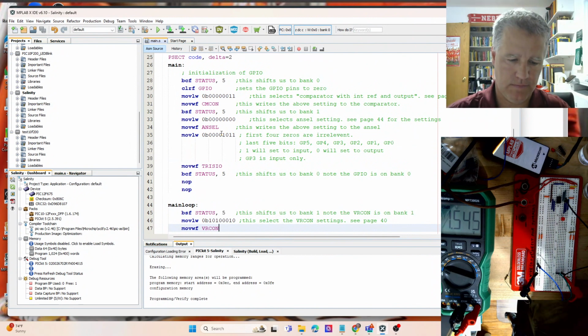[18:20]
And this will just change the output pin depending on whether we're exceeding or less than that voltage. And also, I think there was something else I wanted to mention. Yeah, let me go back up here. CMCON, this is again page 38. So 37 is where we compare. Let's see. Here it is.
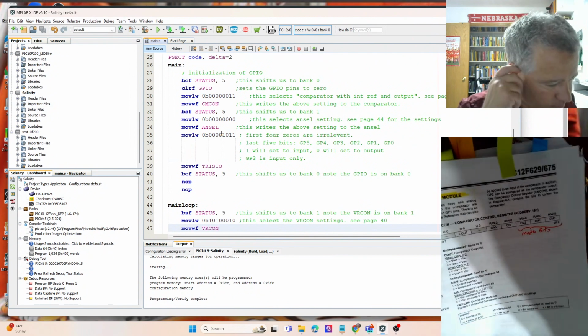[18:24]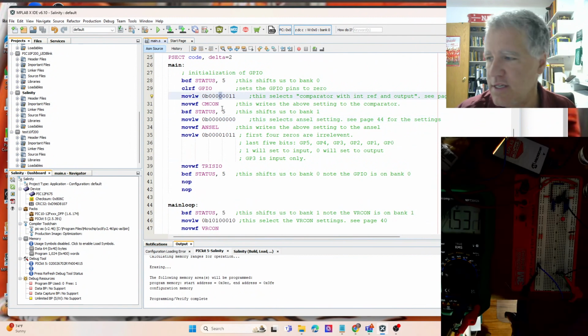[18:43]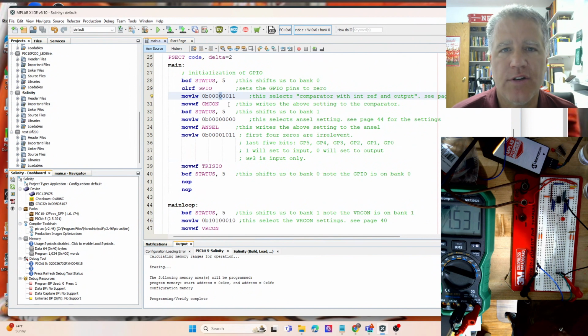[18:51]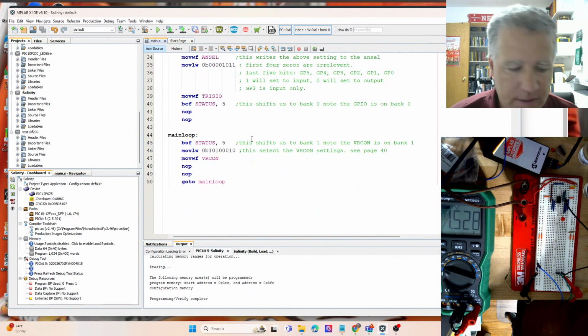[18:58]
So we want, let's see, where is it? Right here, pin 4, we want a non-inverted output. So we put that as 0 there, because we want the light to be off above that voltage. Okay. So I think in our earlier lab with the comparator, we had that set as an inverting output. And that will control whether the light's on above the voltage or below the voltage.
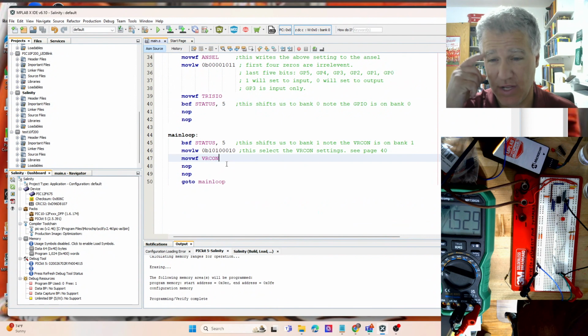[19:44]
A final word here. Notice how simple this code is. We don't have to turn on and off that pin. And I kind of misspoke earlier when I said we're going to have to go back and forth with the GPIO. It's not the case in the comparator setup. The comparator will just automatically turn the output on or off relative to its state. And so as this is going through the loop, it will just control that output pin. We don't need to go back to bank 0 to control that output pin. So I misspoke earlier on that.
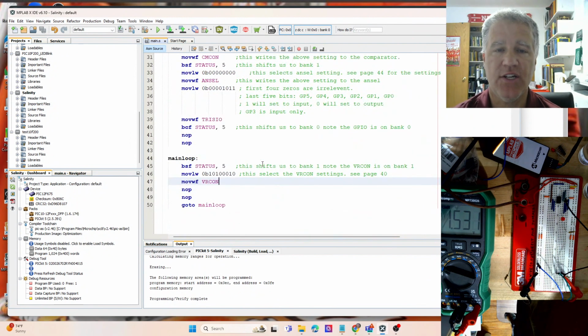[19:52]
All right. So this is an experiment where we have tried an application to measure the salinity, or have an alert for the salinity of a solution. Oh, your solution's getting too salty, so we're going to turn on an alert. And so go ahead and play around with this. See if you can think of ways to improve this. If you are doing this lab through Concordia College and you want to use different salts or try some various things, just come by and see me. Otherwise, like I say, this lab is pretty easy to do with stuff that you have at home.